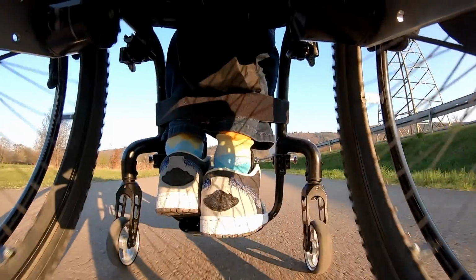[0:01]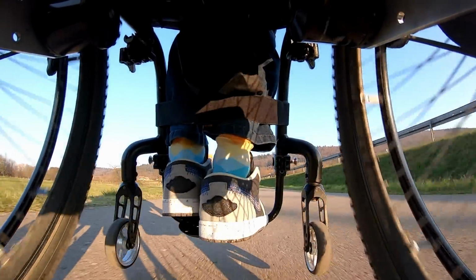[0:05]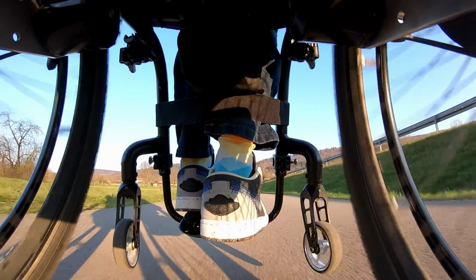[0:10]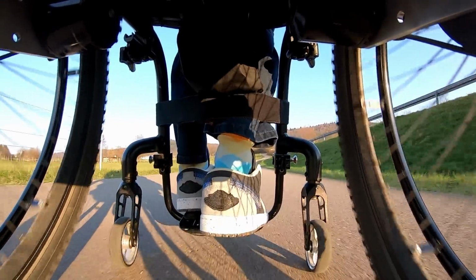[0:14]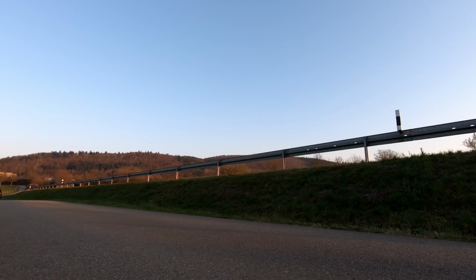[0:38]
Hey guys, I think I built the fastest everyday wheelchair. There are lots of builds out there with big motors but almost no usability. Most of them are just mobility scooters rather than actual active wheelchairs. And I'm not just saying that, I have recorded footage of me going 40 km/h doing wheelies without any problem.
Well, there are problems but not power related. And keep in mind, that's my everyday wheelchair and that's not even a top speed. I have developed a small, lightweight, robust and of course very powerful electric drive for my wheelchair. And in this video, I'm going to show you how I did it.
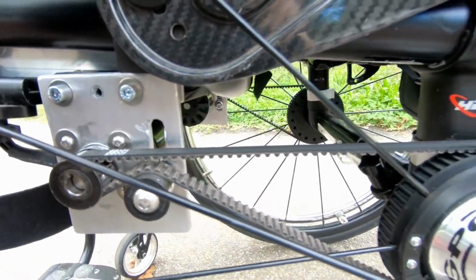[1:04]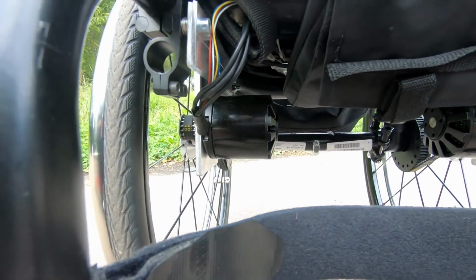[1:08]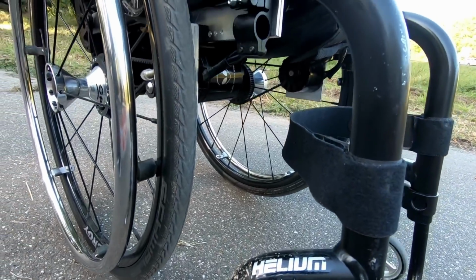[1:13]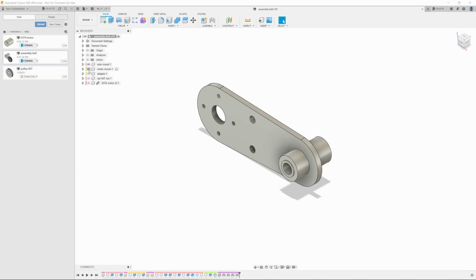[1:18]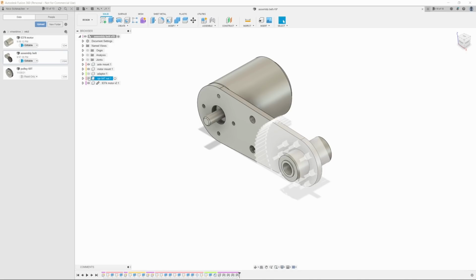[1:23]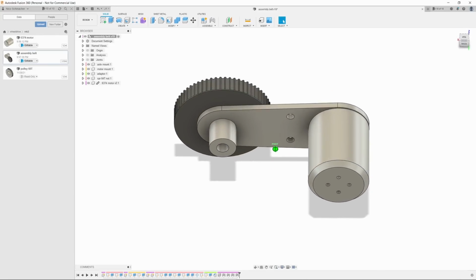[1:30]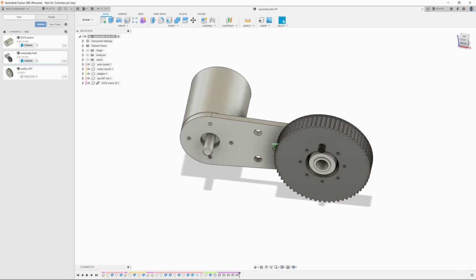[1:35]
Looking back at the first iteration, there are two major problems: where to mount the motors and the fact that the pulley was mounted directly to the wheel. The new design is a single, very compact assembly. I'm going to replace the axle adapter and weld the motor plate on there. That way I don't have to worry about where to put the motors. The second big design decision was to have the pulley mounted on the adapter piece using a bearing. This significantly increases the usability, which I will demonstrate later.
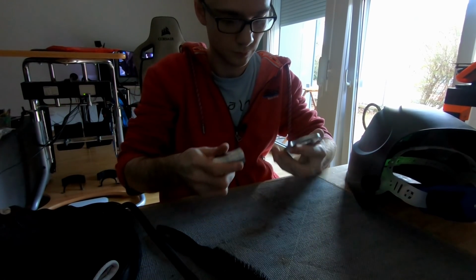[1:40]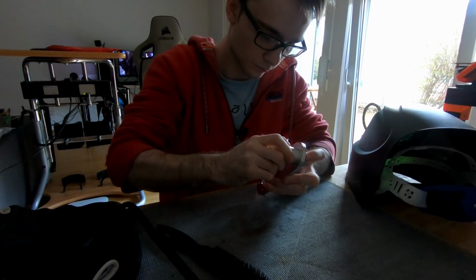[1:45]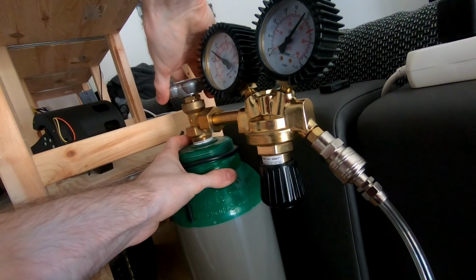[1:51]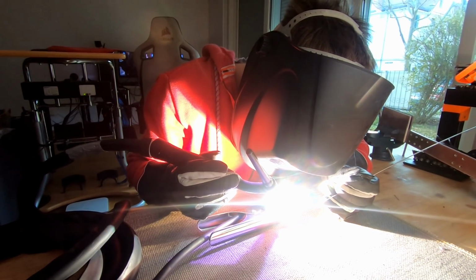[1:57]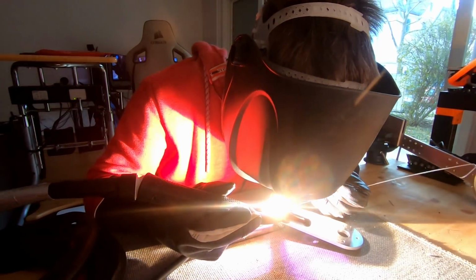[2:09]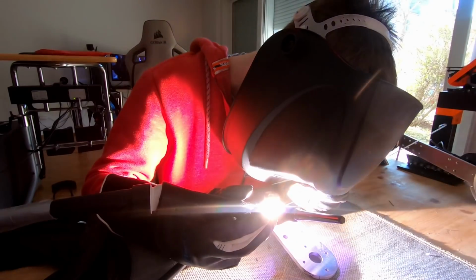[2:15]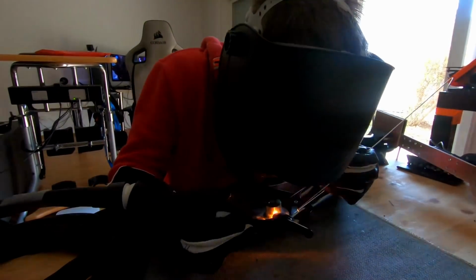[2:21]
The adapter and the motor plate are CNC'd out of aluminium to properly support my weight. A friend of mine helped me CNC these parts, so the only thing left to do is weld them together. I have to admit, this is my second time welding, so I'm still gathering experience. Especially aluminium is very tough to weld. At first, I had no idea what I'm doing, but I did end up figuring out which configuration and settings work best.
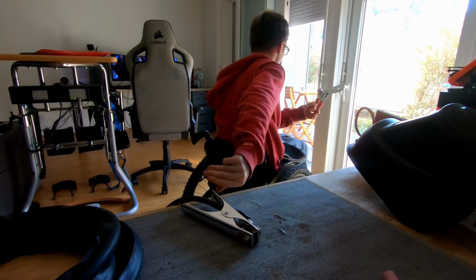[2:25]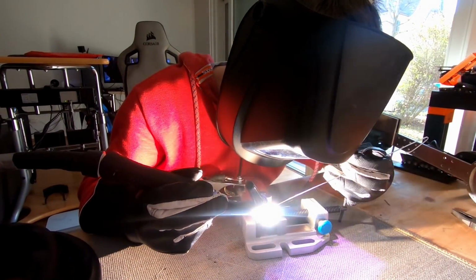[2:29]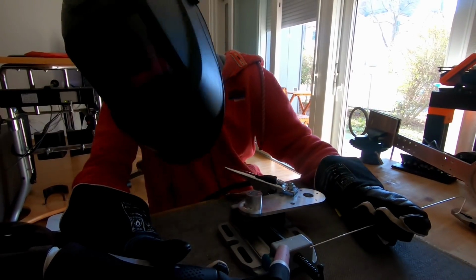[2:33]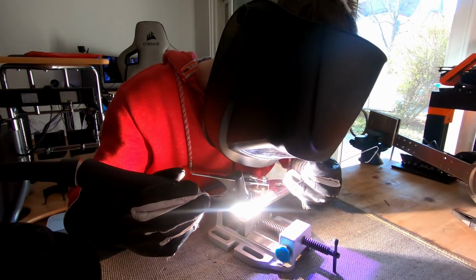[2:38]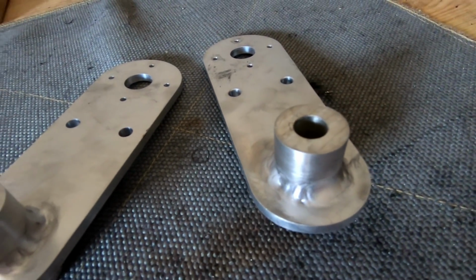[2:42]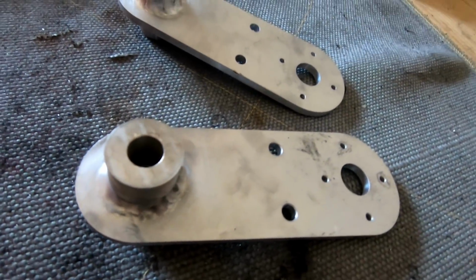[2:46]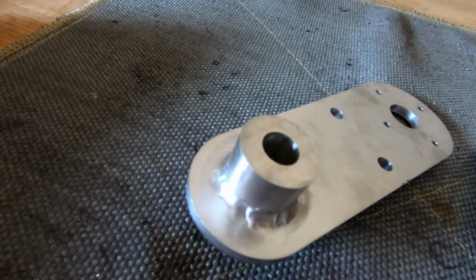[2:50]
That being said, safety is a serious issue. However, as you can see, I am limited to the technology of my apartment. The parts turned out great. Aesthetically, I could have done way better. Also, the surface is uneven and sometimes I should have used way more filler material. However, the parts are fully functional.
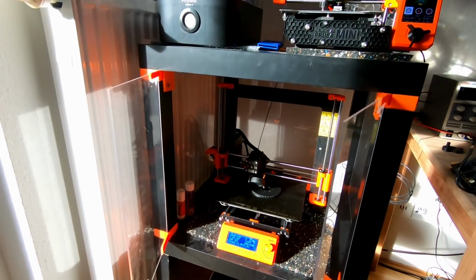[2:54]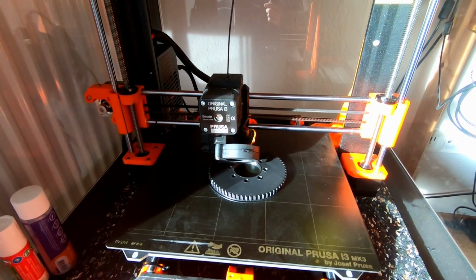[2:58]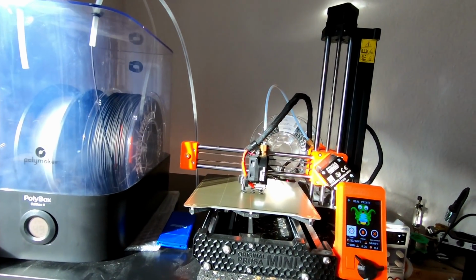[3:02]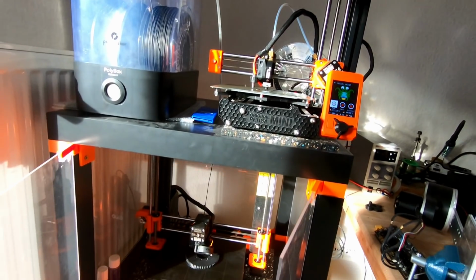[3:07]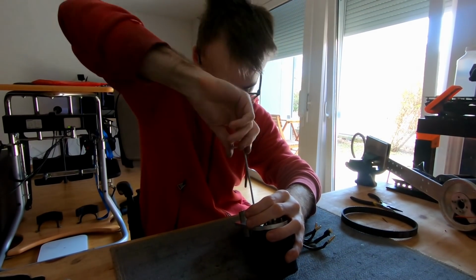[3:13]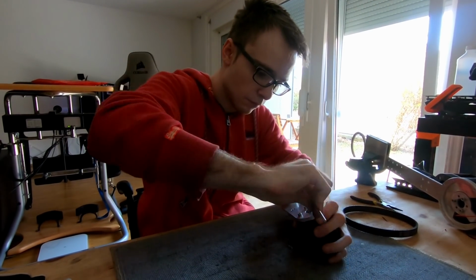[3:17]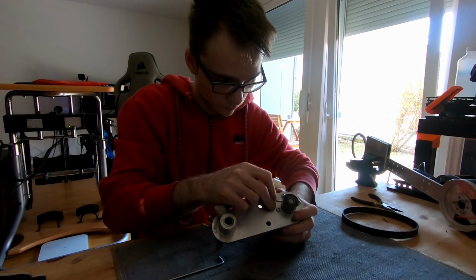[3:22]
The last two parts are the pulley and the adapter pieces. At the moment, I'm printing everything using PLA. After using PLA for the first iteration, I can say that the material is well suited for this application. Even after thousands of kilometers, the pulleys work fine. I have to mention that these small adapter pieces are currently designed specifically for my off-road tires. Depending on the tire, a different adapter piece has to be used.
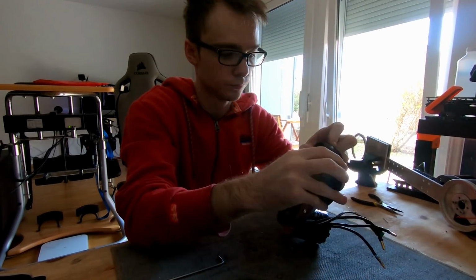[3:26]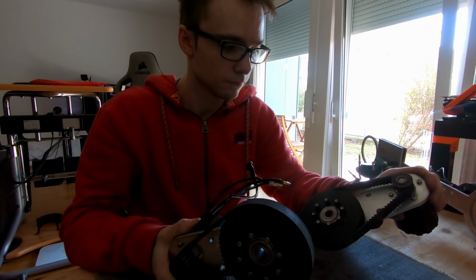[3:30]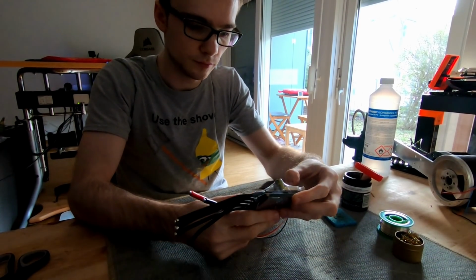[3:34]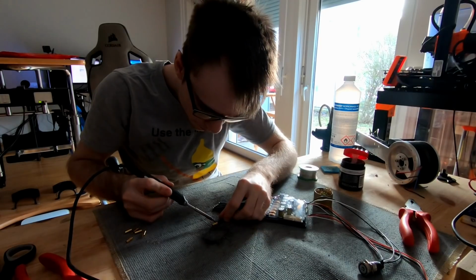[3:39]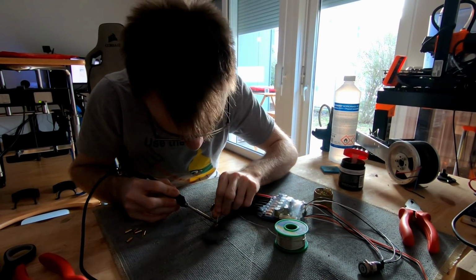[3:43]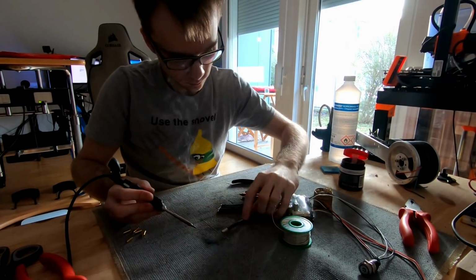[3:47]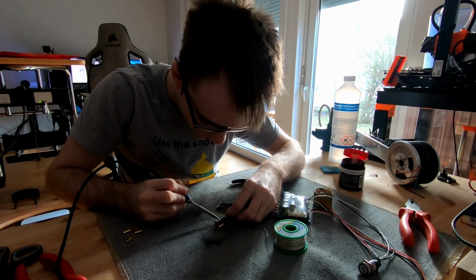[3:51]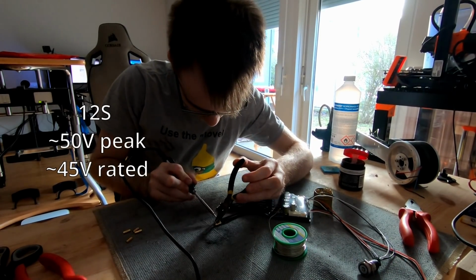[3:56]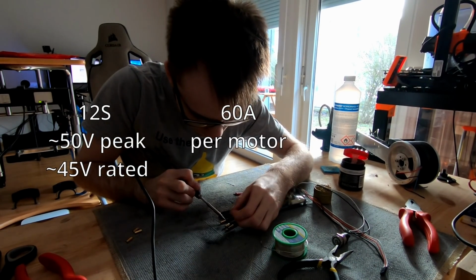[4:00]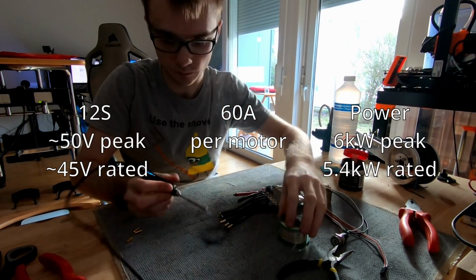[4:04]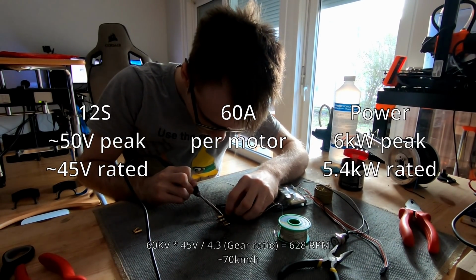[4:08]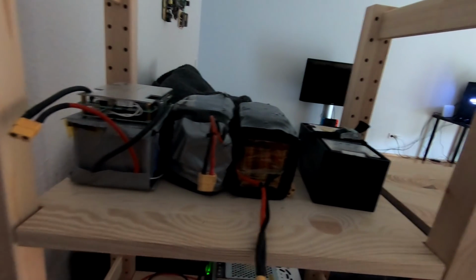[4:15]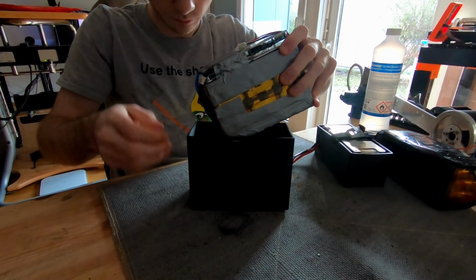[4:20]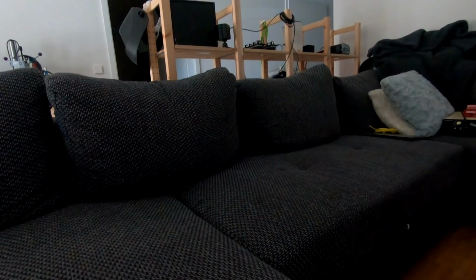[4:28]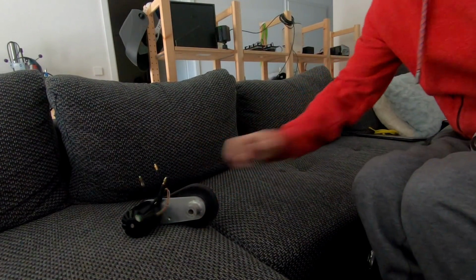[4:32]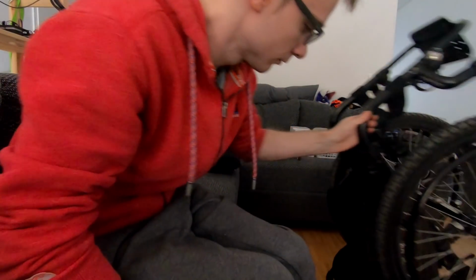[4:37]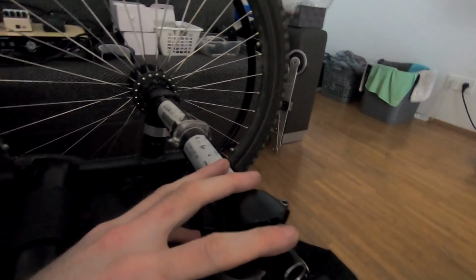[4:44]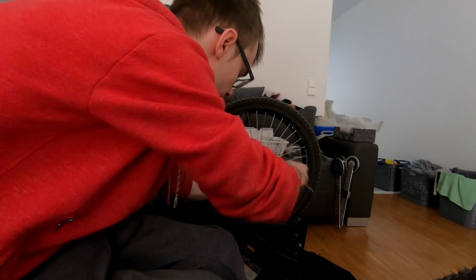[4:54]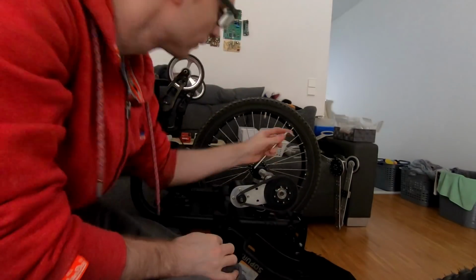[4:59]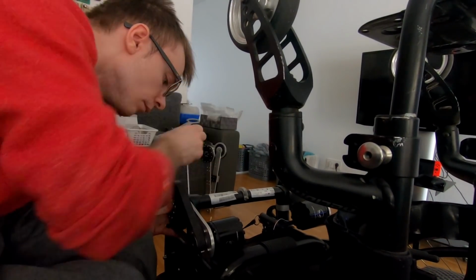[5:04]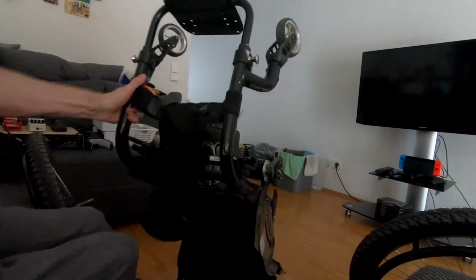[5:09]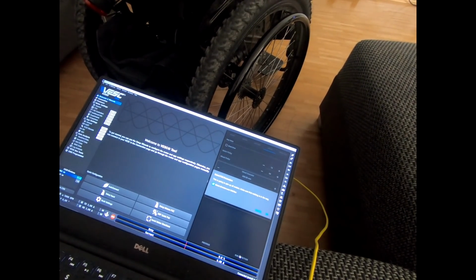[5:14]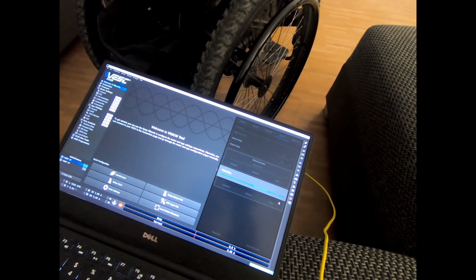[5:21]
When it comes to batteries, I spot build my own battery packs and use different batteries depending on what I want to do. For testing, I will use this 12S 2P 400Wh battery pack. The next step is replacing this adapter piece with my own part. Now, all the hardware is done and all that's left is programming the speed controllers. There are many videos out there on how to do this, so I will skip this part.
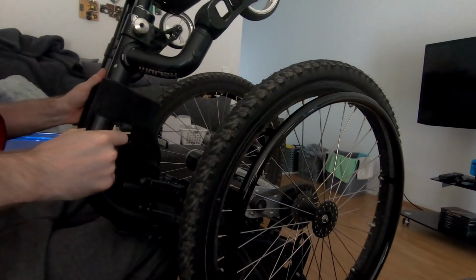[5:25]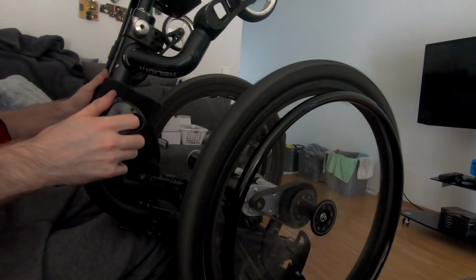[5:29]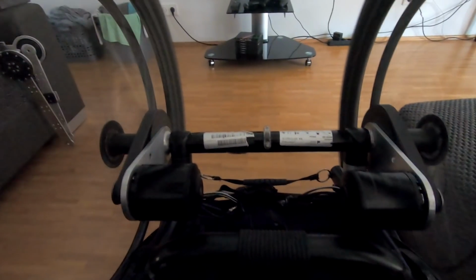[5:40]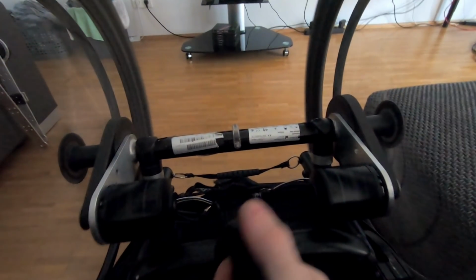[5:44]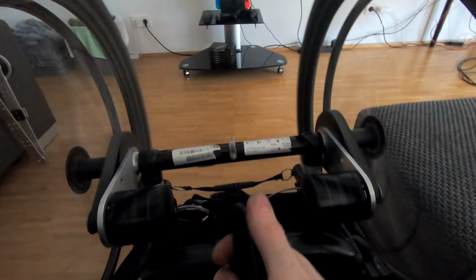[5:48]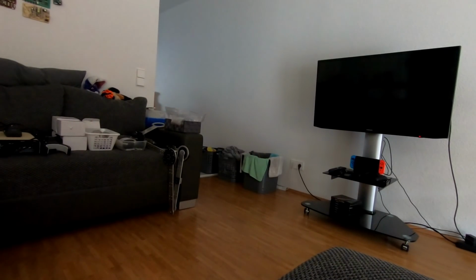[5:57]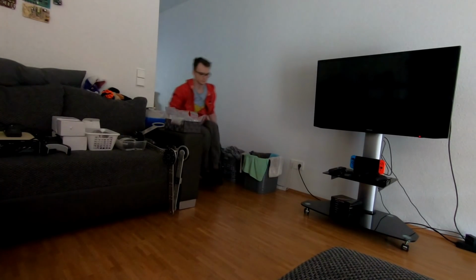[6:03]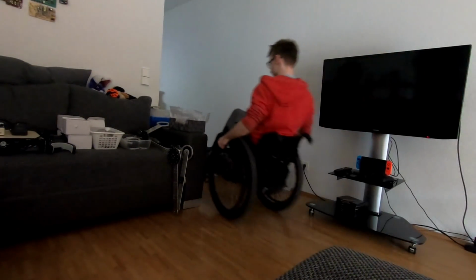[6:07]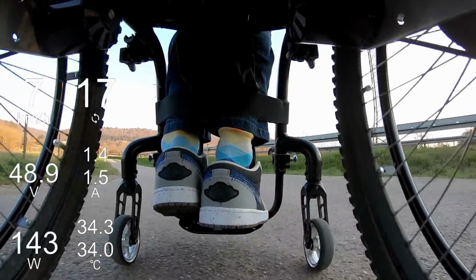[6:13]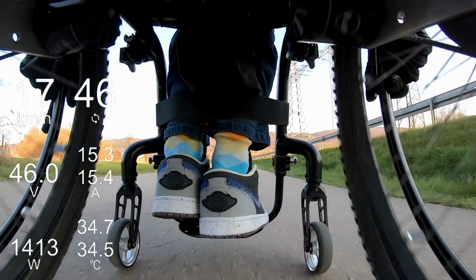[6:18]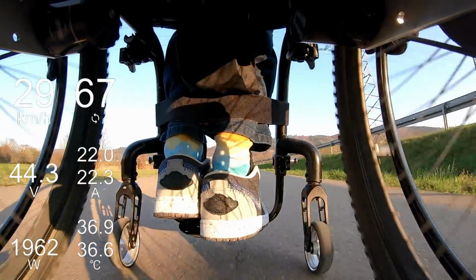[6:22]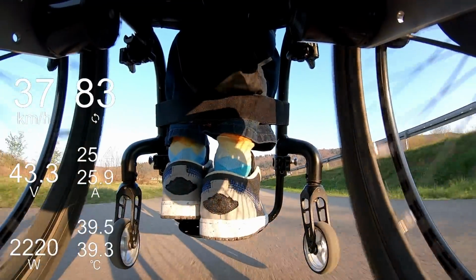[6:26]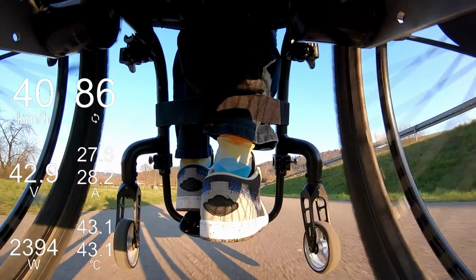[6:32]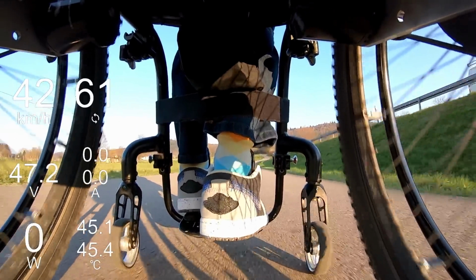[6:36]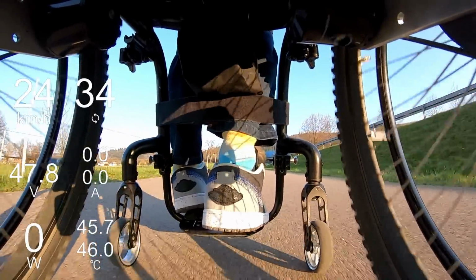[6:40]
And of course, I had to try it out, but it's too much power for my apartment. We have to go outside to fully test both the limits of the electric drive, but also the limit of my everyday wheelchair. And trust me, I did learn from my mistakes. There's more than enough power to go 40 km/h. I can even start doing wheelies at this speed just by tapping the throttle.
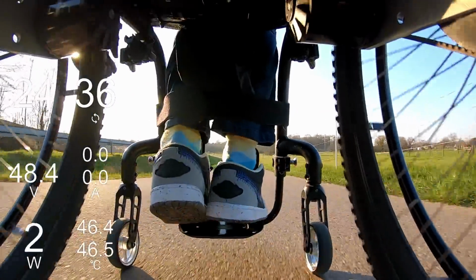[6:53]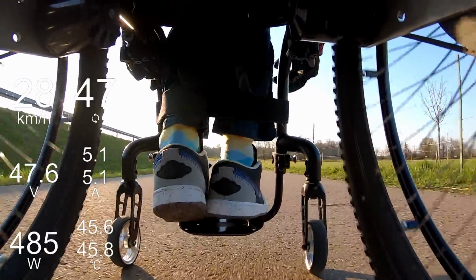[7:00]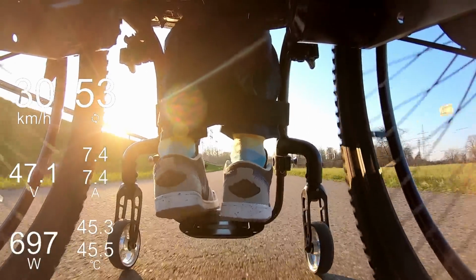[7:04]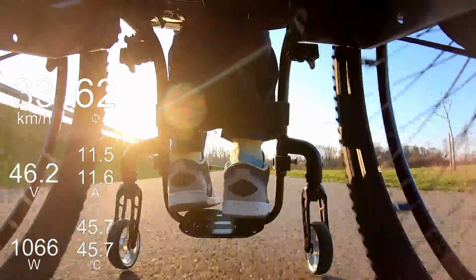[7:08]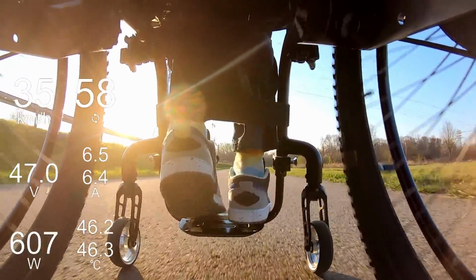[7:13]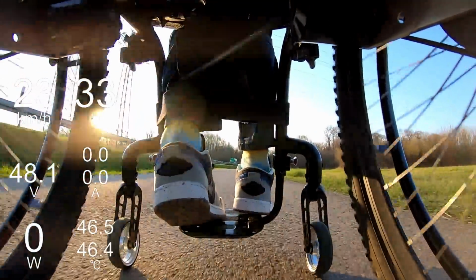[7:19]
I control both motors with a single remote. That way, I have both hands on my wheelchair. Because I'm a paraplegic, this gives me stability and control. I can precisely brake without catapulting myself out of my own wheelchair. I do have regenerative braking, which I use. However, when I'm braking with full force at high speed, I can feel my body shifting to the front and almost out of my wheelchair. That's why I want to keep my hands on the wheels at all times.
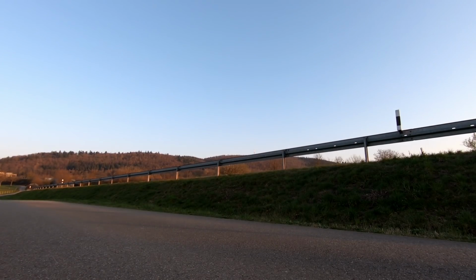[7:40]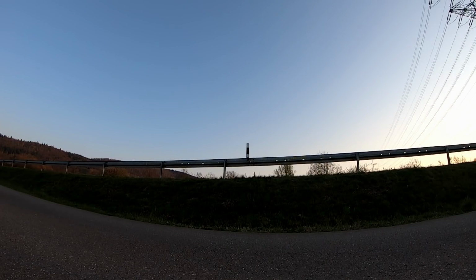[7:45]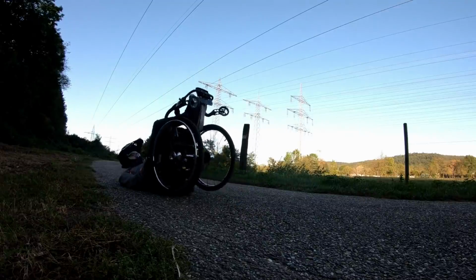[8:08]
Wheelies at high speeds are relatively easy to pull off. I have a steady throttle, which is usually so much that I'm about to fall over. But I fine-tune the tipping point of my wheelchair by braking with my hands. Another important topic when it comes to wheelchairs is torque. The electric drive has roughly 25Nm of torque on each side, which is not much considering the size of the wheels. However, I am able to get up most hills as long as I don't fall over. So, more torque wouldn't help and more power wouldn't help either.
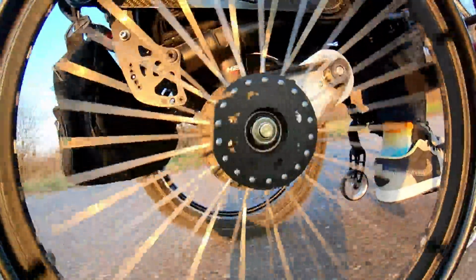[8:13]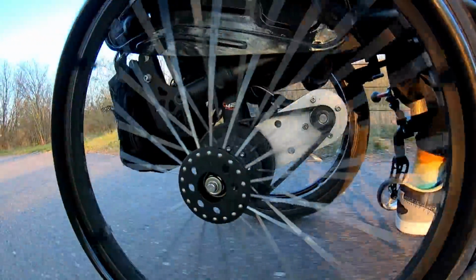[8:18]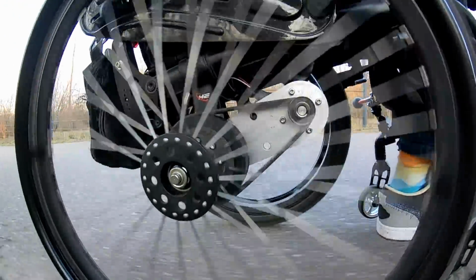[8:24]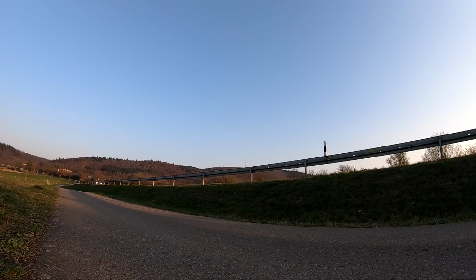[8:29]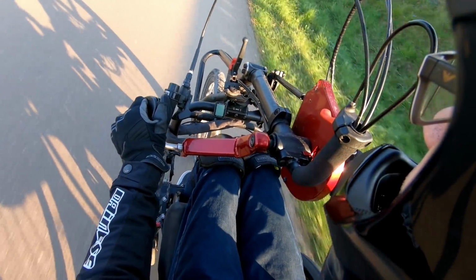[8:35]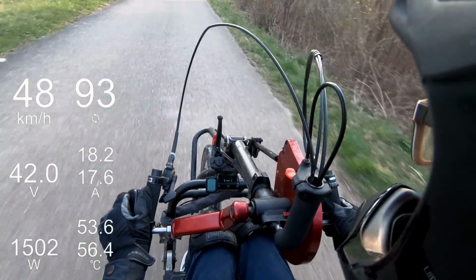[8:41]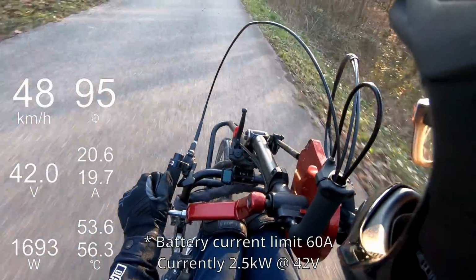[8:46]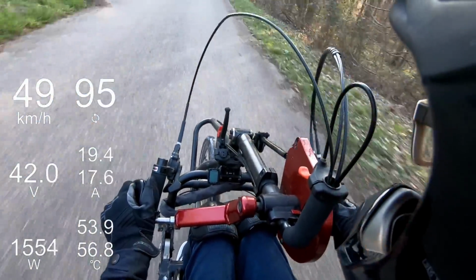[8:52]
Going high speed in just the wheelchair is very dangerous. Every time I brake, my whole weight shifts to the front tires and I feel like I'm about to crash. That's why I use this hand cycle for stability. I can just attach it to my wheelchair, usually to work out, but today we are going to test the top speed. In the corner you can also see the power output of both motors. The power does not exceed 2.5kW because for the first tests I have set the current rating to 60A. But it should be more than enough. You can see that 50 km/h is no problem.
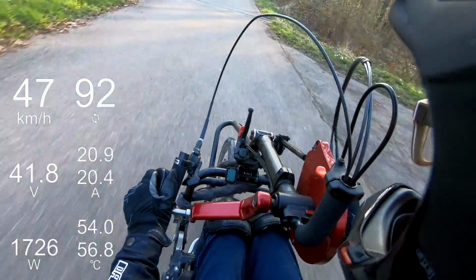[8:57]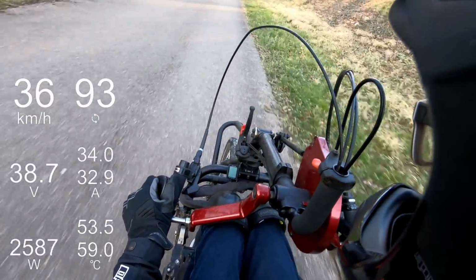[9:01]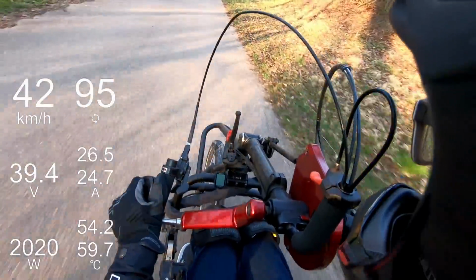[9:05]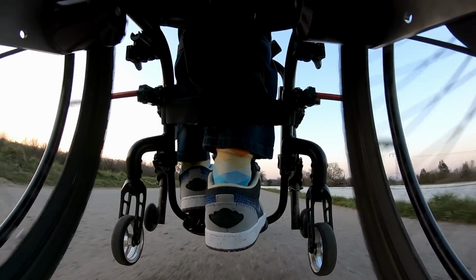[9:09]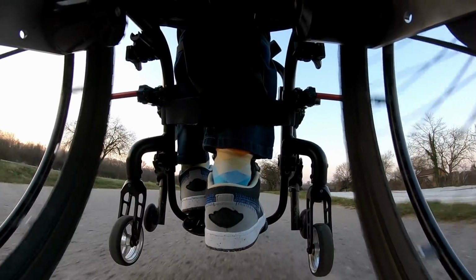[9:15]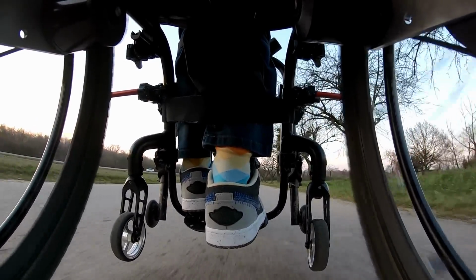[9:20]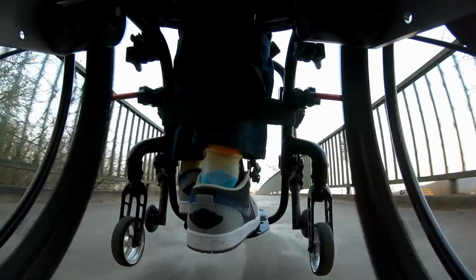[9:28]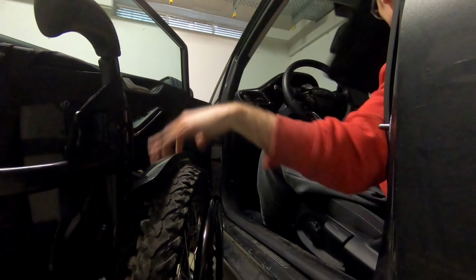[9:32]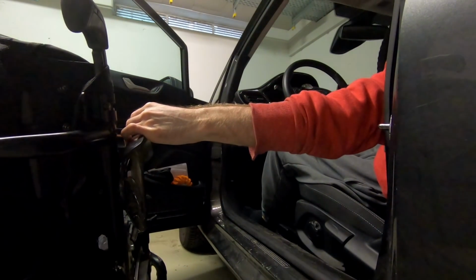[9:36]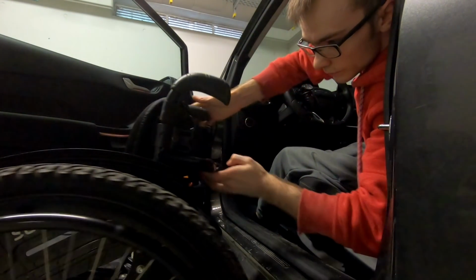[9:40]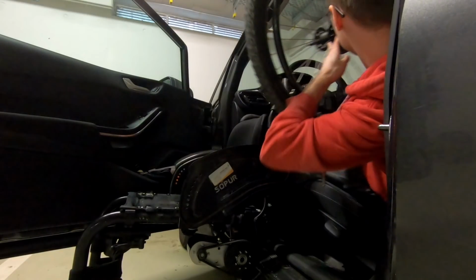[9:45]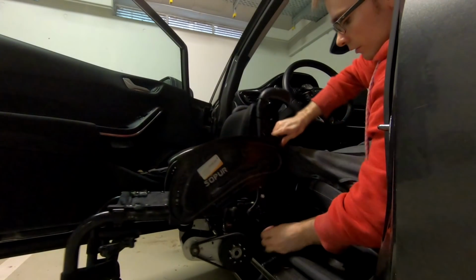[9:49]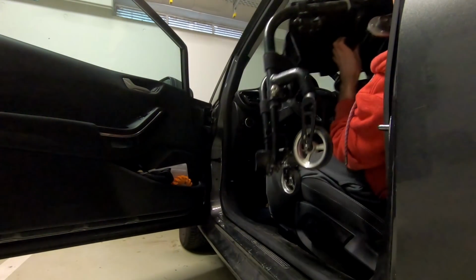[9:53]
And the ride itself is much smoother than with just the wheelchair. Going fast the power consumption is extremely high. I guess wheelchairs are just not meant to be aerodynamic. Now, remember when I talked about the usability of this design? I can very easily remove the wheels and put them back on really quick. The only downside is that the whole system adds just under 2kg of weight to my wheelchair, of course without battery. But in my opinion 2kg is almost nothing considering the quality of life I get from this electric drive.
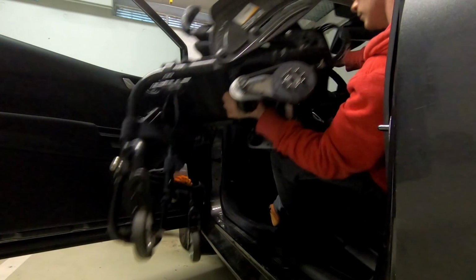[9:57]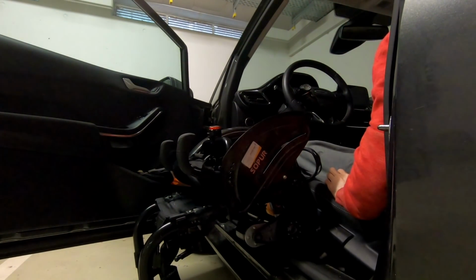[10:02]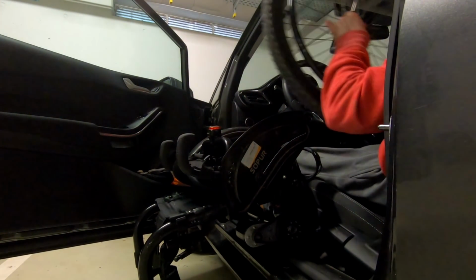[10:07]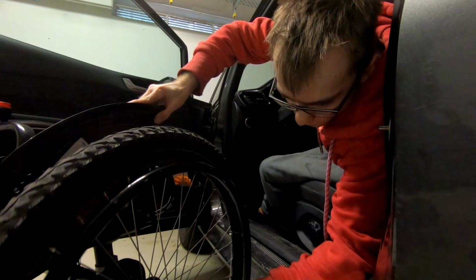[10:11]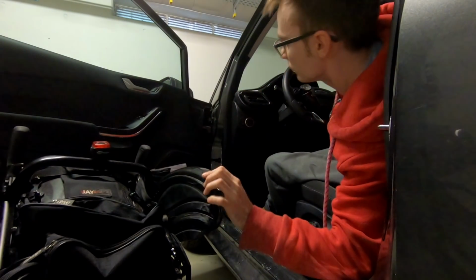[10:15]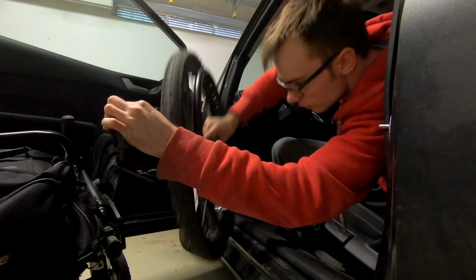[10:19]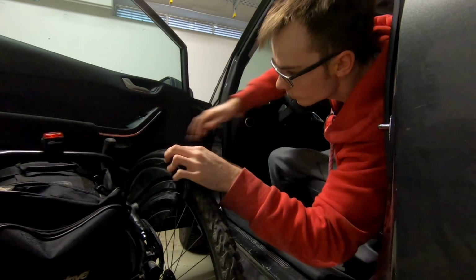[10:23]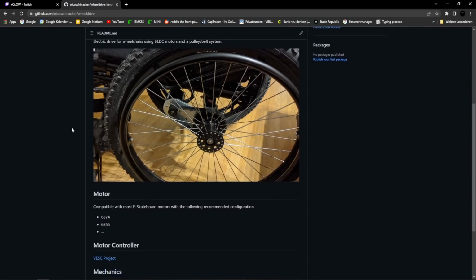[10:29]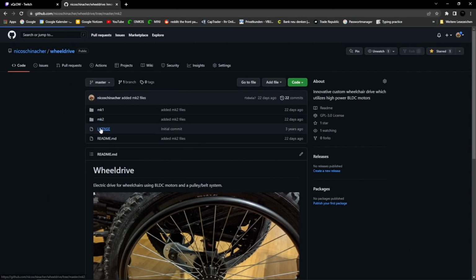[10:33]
Now, I showed you all those clips with full power going fast doing wheelies. But to be honest, I don't even use it like that. In the end, I really appreciate the possibilities and the independence it gives me. Before I end this video I want to say that I am not selling this as a product. This is just a DIY project. That's why I decided to share all the parts I have used. This project is open source so anyone can download the files for free.